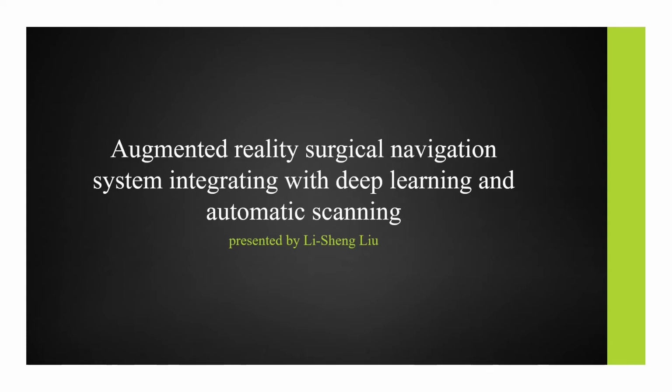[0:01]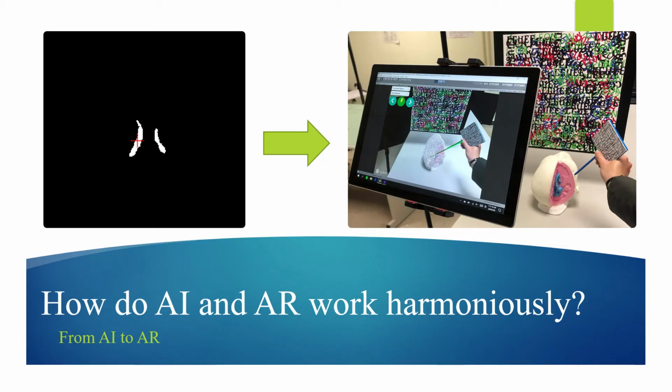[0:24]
Hi guys, I'm Li-Sheng Liu and I'm really glad and honored to be here to present my thesis presentation to all of you. My topic is about an augmented reality surgical navigation system integrating with deep learning and automatic scanning. So let's get started.
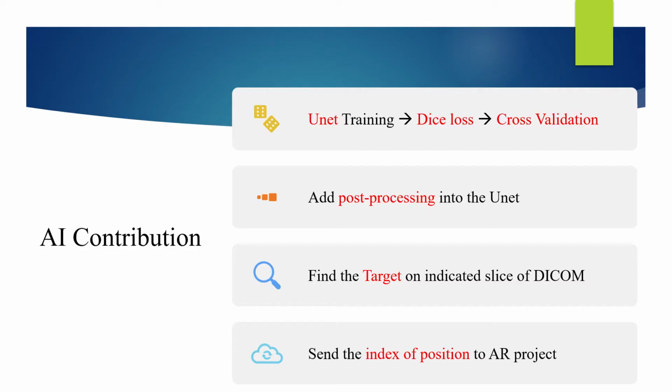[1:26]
Because in our case, it's all about how to support and assist surgeons to conduct EVD surgery. So what we will do is let artificial intelligence and augmented reality work harmoniously. We want the AI, after training and deep learning, to learn where the target point is, select it automatically, and then send the position of the target point to the AR part of our system, which is the more front-end part, with several auxiliary functions that can assist surgeons to conduct the EVD surgery.
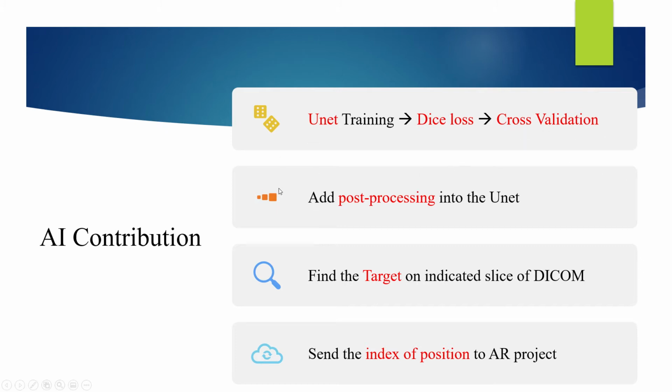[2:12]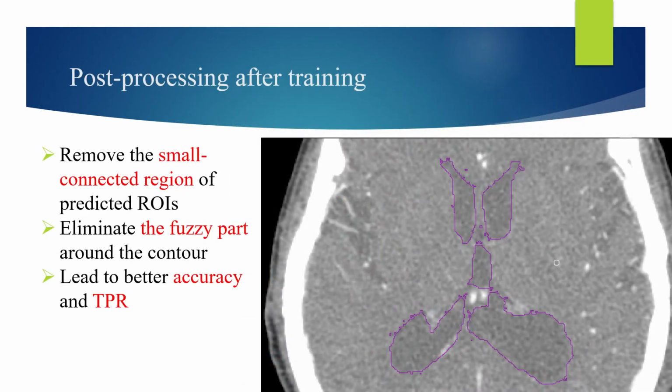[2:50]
So let's start with the AI contributions in my thesis. Here we chose UNet as our neural network, and we chose the dice loss as our final loss function. We also implemented cross validation because we are lacking training data: we only got 10 sets of DICOM from patients, so we need to do cross validation. After training, we add post-processing to the UNet to increase the accuracy and the true positive rate. After that, we find the target on the indicated slice of DICOM, then send the index of the position to the AR project so that it can visualize all the functions to the surgeons and assist them to conduct EVD surgery.
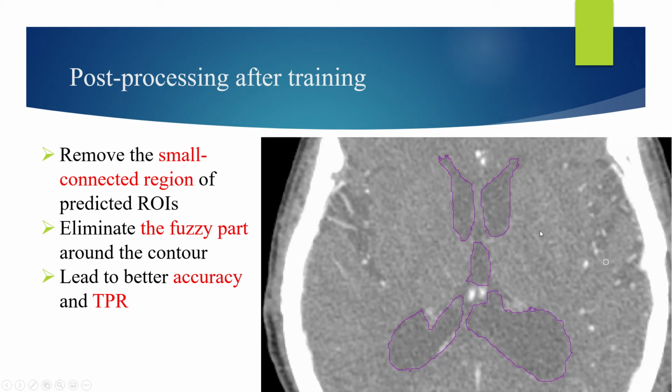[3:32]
Alright, so let's talk about the post-processing after training. Post-processing in our case is to remove the small connected regions of the predicted ROIs, which is region of interest. Basically, it eliminates the fuzzy part around the contour and leads to better accuracy and true positive rate. As you can see here, we got a lot of fuzzy parts around the contour. After the post-processing, they are cleared.
Right. So let's talk about the contour comparison. As you can see here, around the ventricle, the red contour is the label contour, and the green contour is the predicted contour generated by UNet, by our system. We calculated accuracy pixel by pixel, and the final accuracy is 99.98%, which is pretty good.
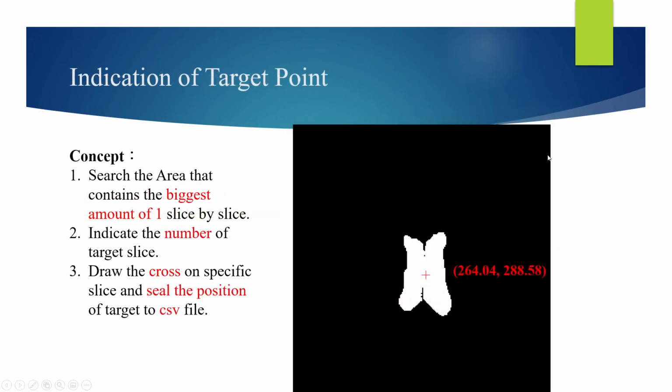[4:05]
And talking about the indication of the target point. The basic concept is to search for the area that contains the biggest amount of ones, which is the white part of this diagram, slice by slice. Then we indicate the number of the target slice. For instance, on the x-axis we may have 256 slices in total, but we want to indicate the specific slice of the DICOM, and know what number that slice is. Then we draw the cross on that specific slice and save the position of the target to a CSV file so that the AR project could obtain the position of the target from the CSV file.
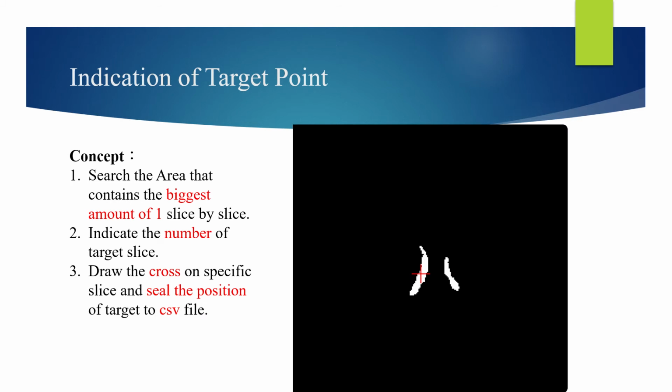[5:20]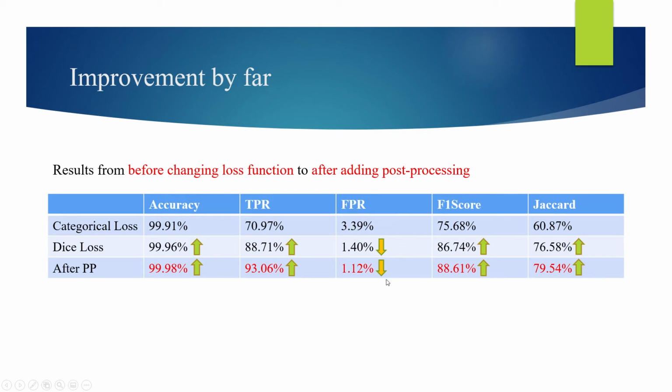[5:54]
Right, so this is the improvement so far. In the beginning we chose categorical loss, but after that we found that dice loss is more suitable in this case. After adding the post-processing, we could see the accuracy, true positive rate, F1 score, and Jaccard similarity all increased, and the false positive rate decreased. Comparing the papers from 2017 to 2021, our proposed thesis got the best results. Before 2017 there were no related papers on AI hydrocephalus detection, so we didn't find any, and I just selected the period among this.
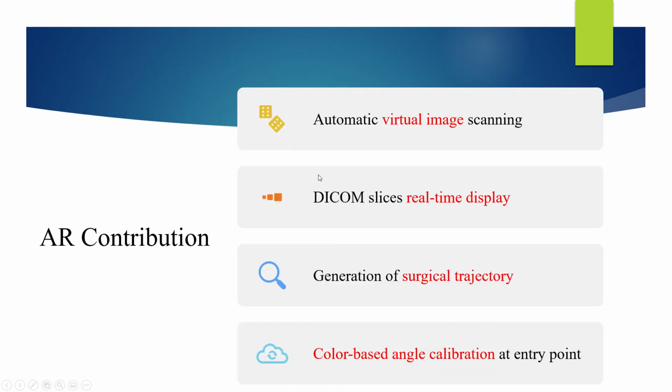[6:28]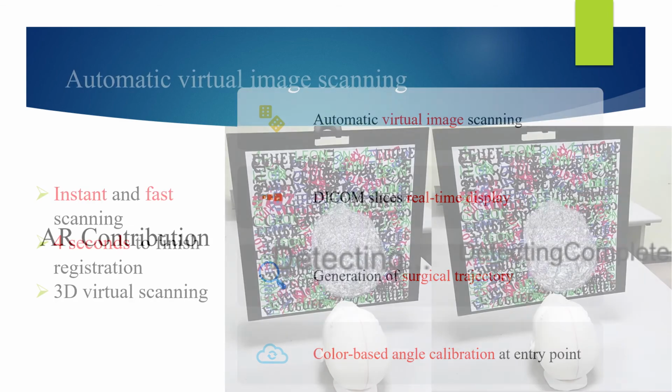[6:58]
Right. So let's talk about the AR contributions in my thesis. The AR part consists of automatic virtual image scanning and several auxiliary functions, including DICOM slice real-time display, the generation of the surgical trajectory, and color-based angle calibration. Start with the automatic virtual image scanning. I would call it instant and fast scanning, because as long as the camera points at the image target of the head, it will start to scan. I call it fast because it took just 4 seconds to finish all the registration, and it is 3D virtual scanning as well.
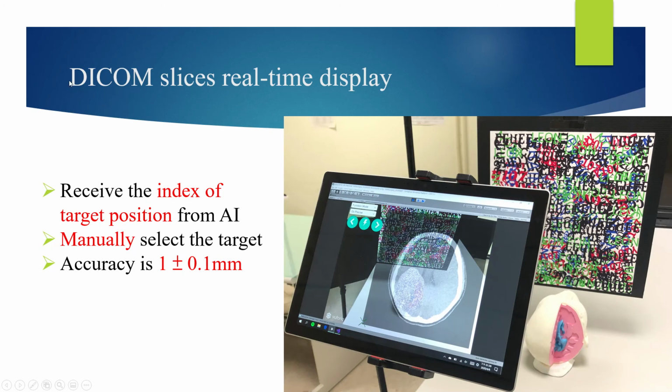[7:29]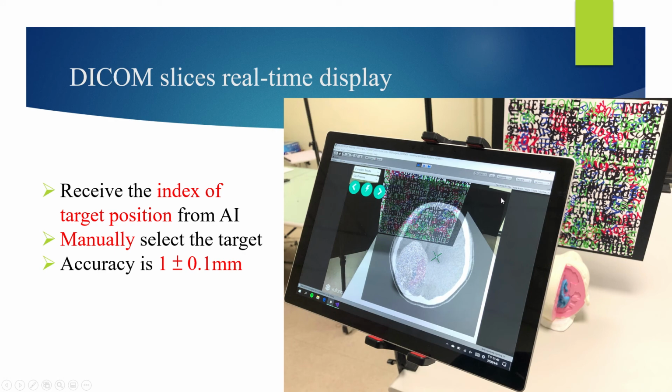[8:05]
And talking about the DICOM slice real-time display. After the AI part, we receive the index of the target position from the AI, and we also have the option for the surgeon to manually select the target. Among all those trials, the average accuracy is 1 millimeter with a deviation of 0.1. This is before the selection of the target, and this is after the selection of the target.
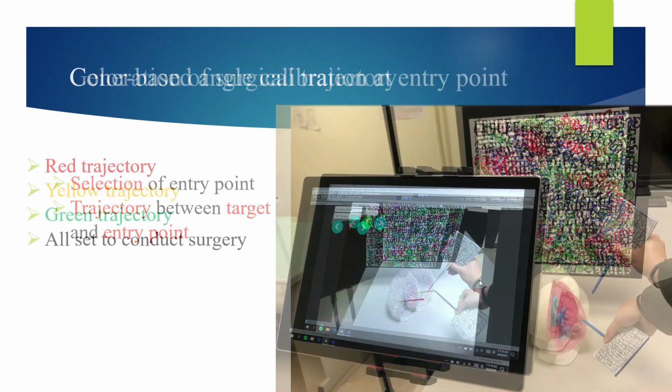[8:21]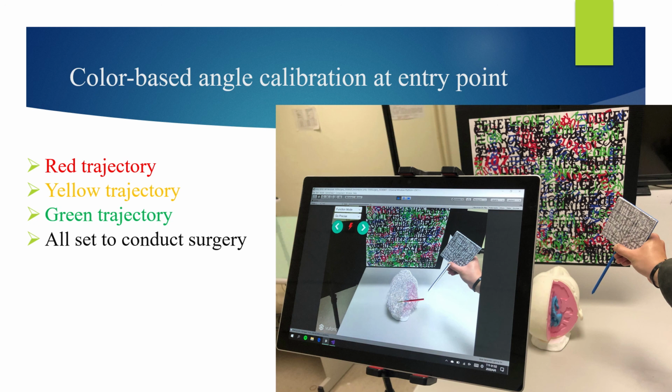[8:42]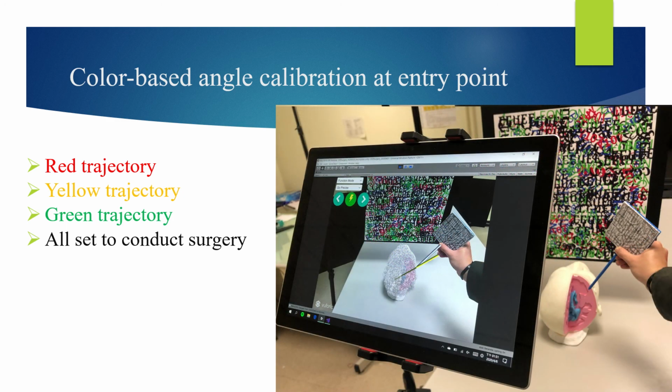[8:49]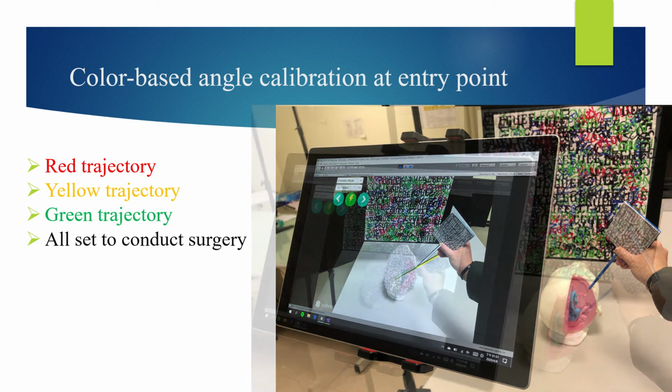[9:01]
After selecting the target, we want to select the entry point as well. After that, we have the trajectory between the target point and the entry point, and then the extension of the trajectory, where different colors mean different things. The red trajectory means that the entry point and the edge point of the navigation stick do not overlap, and the angle is not correct either. The yellow trajectory means that the edge of the navigation stick and the entry point overlap, but the angle is wrong. The green trajectory means that both the position and the angle of the trajectory are correct, and it's all set to conduct the surgery.